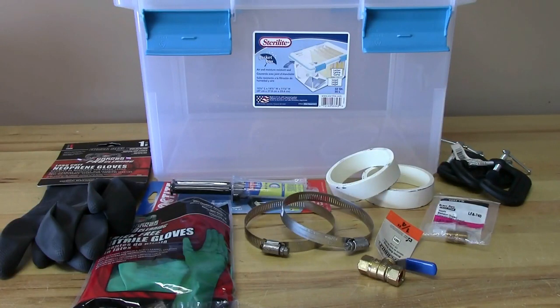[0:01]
Hello everyone. Today we're going to be making a very simple DIY glove box, which is going to come in handy for some future element series videos. And if you haven't seen one before, a glove box is very simply a sealed container that has gloves attached to it that allows you to work inside the container, keeping you separate from any harmful chemicals or keeping very sensitive chemicals separate from the air.
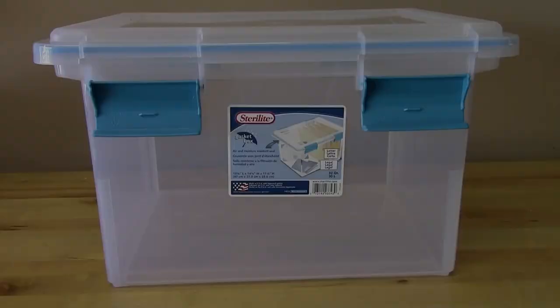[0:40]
And what we have in front of us is hopefully everything that's needed to construct this thing. Given my history with projects, I'll probably have to make several trips to Home Depot before this is done, but we'll see how it goes. So let's get started.
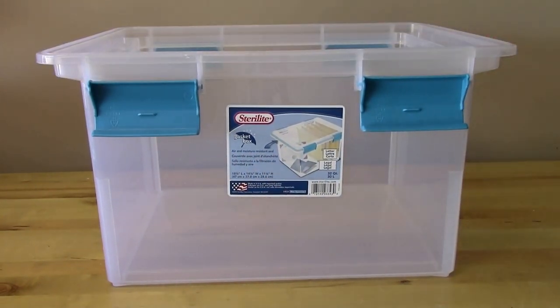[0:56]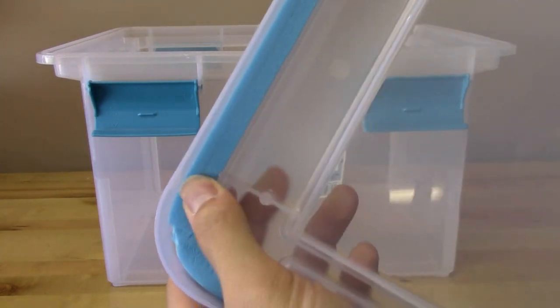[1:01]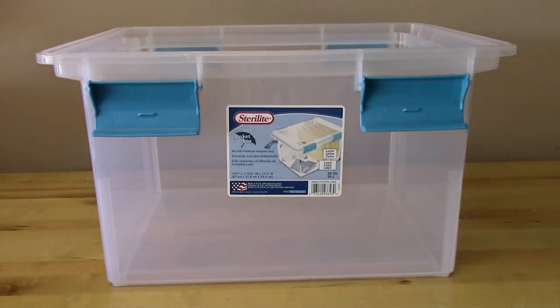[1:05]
Now the first component of the glove box will of course be the box. So I just bought a plastic container. Really any container will work, just whatever size you need. I liked this particular box because it's got this air and moisture resistant seal. If we take the lid off and take a look, it's got this foam liner around the inside here, and that's going to help to seal the box completely. If your box does not have a foam liner like that, that can easily be done by just a strip of foam, like weather stripping or something to that effect.
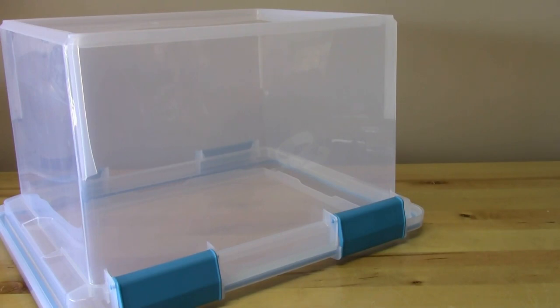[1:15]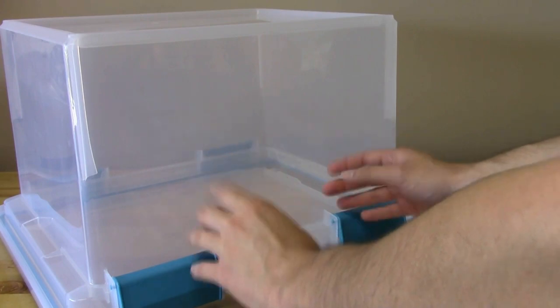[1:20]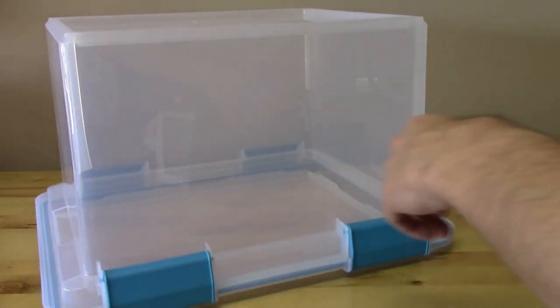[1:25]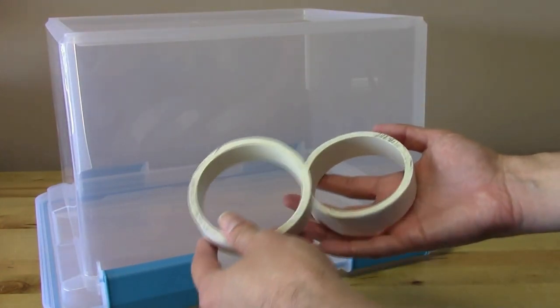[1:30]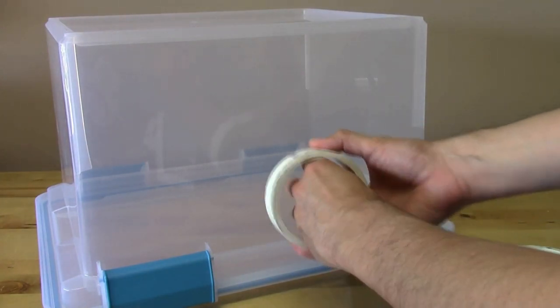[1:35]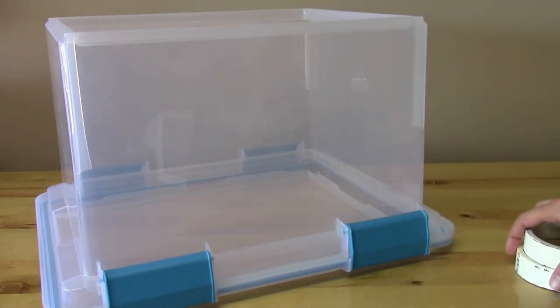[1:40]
So the first thing we'll need to do is make ports for the gloves. We want to do that at a height that's nice and comfortable for us. For me, that's probably about halfway up the box. And the ports are going to be made out of these. These are rings of 3-inch PVC pipe that I cut out of a larger pipe. I use 3-inch because my hands are small enough to fit through it. You could certainly use a different size if you need to. I just wanted to get the smallest size possible so as to not stretch the gloves out too much, because I feel like if the gloves are very stretched, they're not going to last very long.
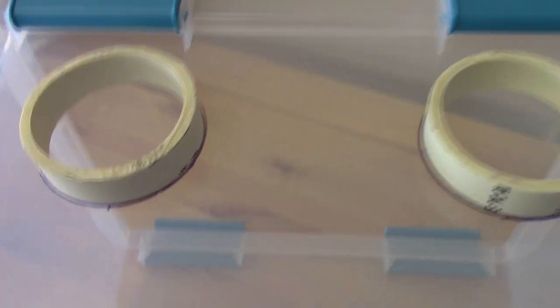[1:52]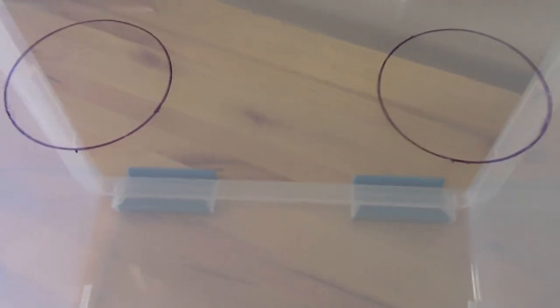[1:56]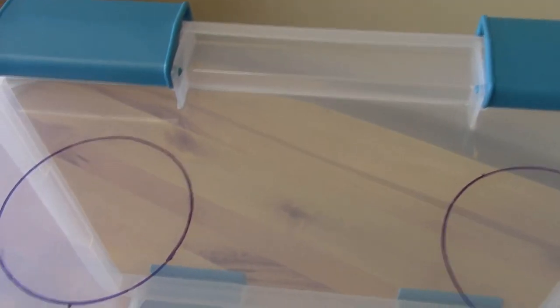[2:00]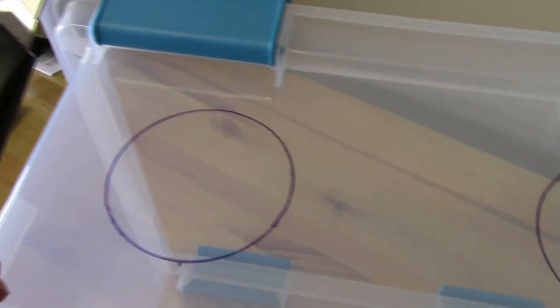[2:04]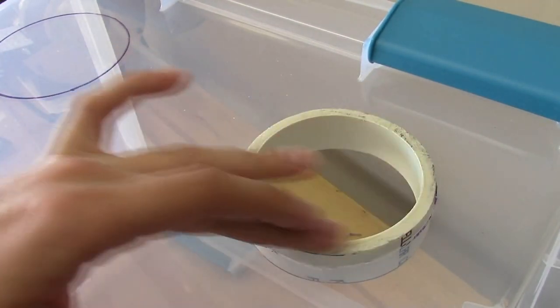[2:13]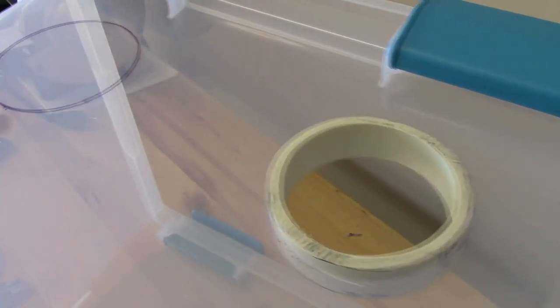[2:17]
All right, I've traced out the outside of each of the PVC pipes. And now I'm going to try to cut it with a knife here, and this may be pretty difficult, so I'm going to put the camera down and we'll see how it goes. Well, the knife really didn't work out very well, but what does work is a rotary tool. I used my Dremel, and I got this cut out nicely, and the PVC pipe fits in there pretty good, nice and snug. So now let's try the other one.
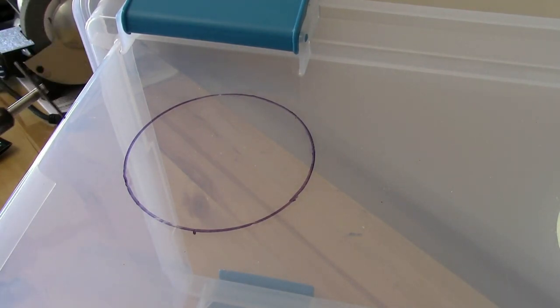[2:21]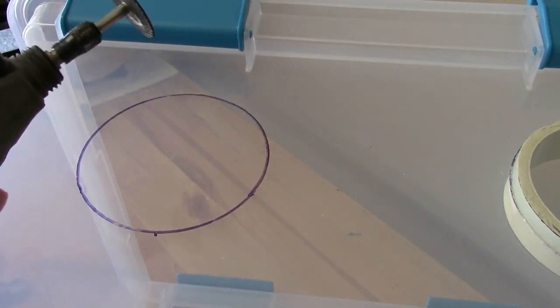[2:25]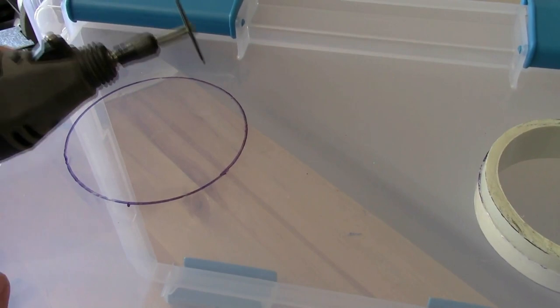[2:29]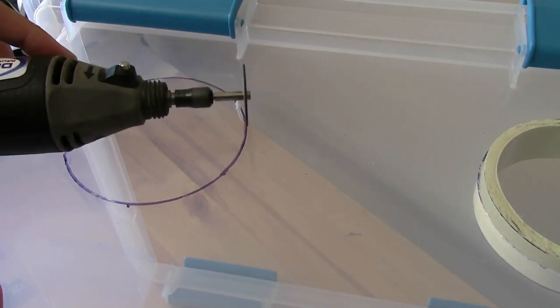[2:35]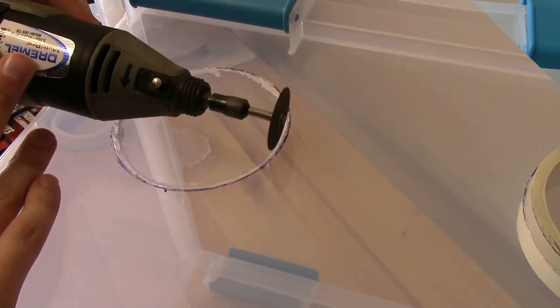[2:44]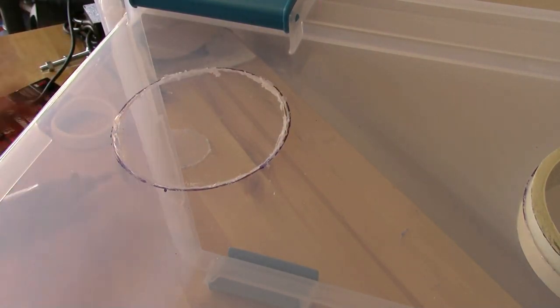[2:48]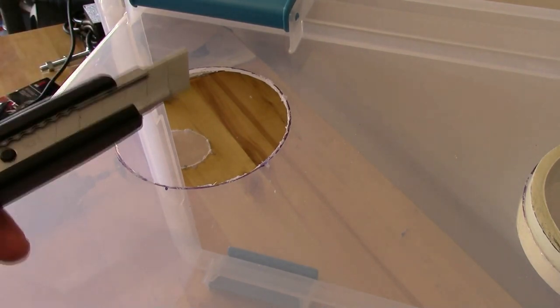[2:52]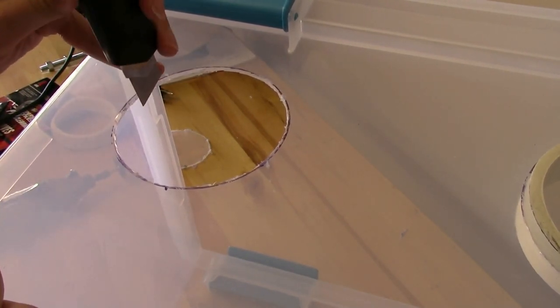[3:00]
This gets a little difficult because the plastic actually melts, so it kind of reseals the holes that you cut. But that's what the knife is for, cleaning it up a little bit. Perfect. Now I can go back and use the knife to clean it up a little bit, scrape off all the melted plastic, and flesh out the hole a little bit more so that the pipe can actually fit in it, because I don't think I cut it quite wide enough.
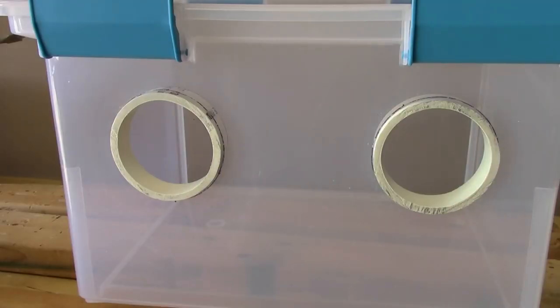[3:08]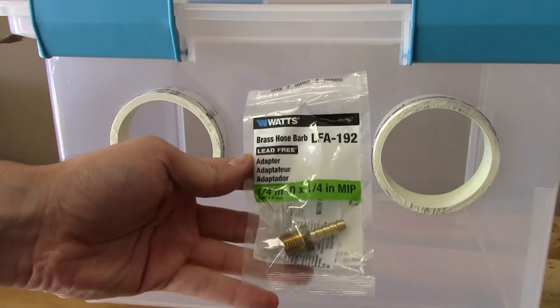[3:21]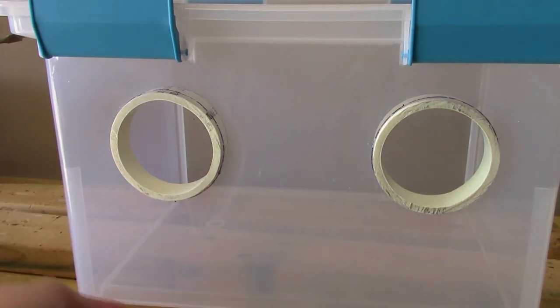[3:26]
Now that we've got both of the glove ports installed, the next piece to go in is the gas inlet. I'm going to be using my glove box as an inert atmosphere chamber, so I'm going to need some way to get my inert atmosphere into the box. And that's going to be from this thing, a 1/4-inch hose barb. So I need to drill a hole in the side of the box somewhere for this to fit into.
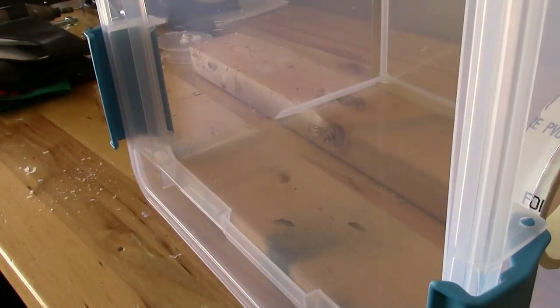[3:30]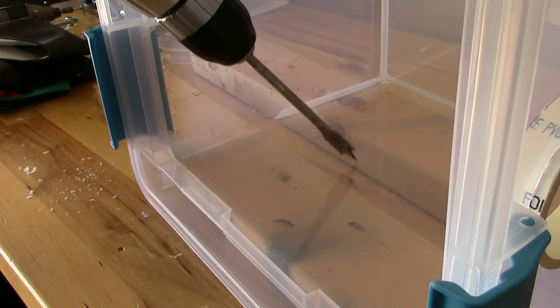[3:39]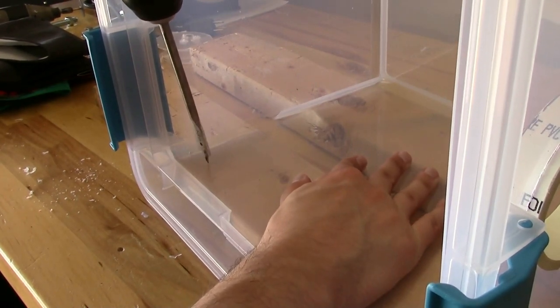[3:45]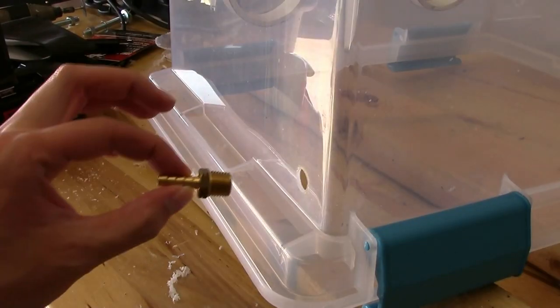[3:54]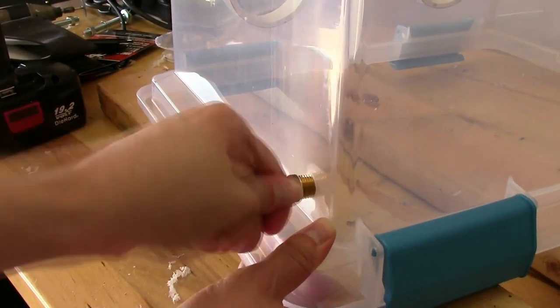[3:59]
And now I've got the box set on its side, propped up by a couple pieces of wood, and I'm going to drill through the box and straight into the wood. That way I'm not going to stress the plastic and potentially crack it, because it'll be supported by the wood. And I'll use a 1/2-inch paddle bit to get that done. Forgive me for the lack of audio here. I actually had the mic muted when I recorded this segment, so go figure. But you can see it makes a nice clean hole. So I'll just flip the box back right side up, and now I can thread the hose barb in place.
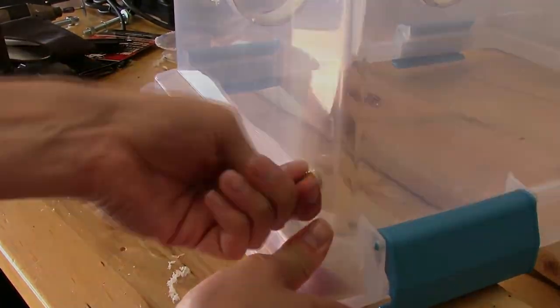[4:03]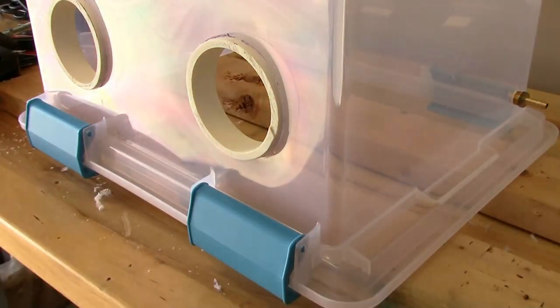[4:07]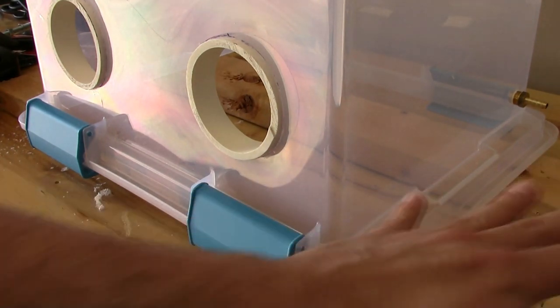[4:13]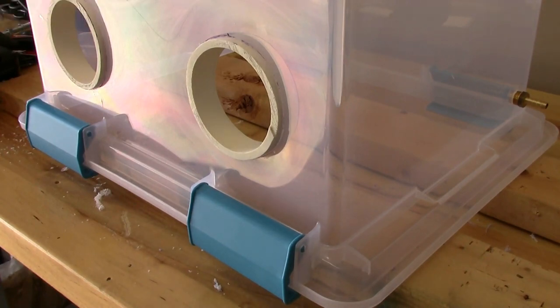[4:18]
Notice the placement of the gas inlet is in the back and on the bottom, because I'm going to be using argon as my inert gas. Argon is heavier than air, so I figure I'll put the gas inlet on the bottom. It'll slowly flow in and fill up the box and displace the air at the top.
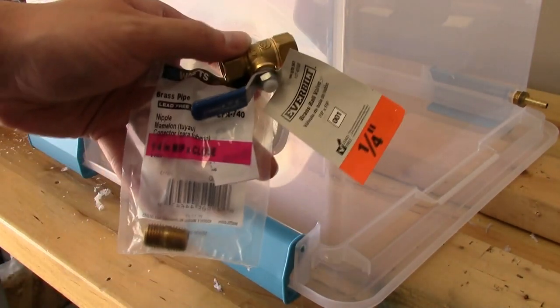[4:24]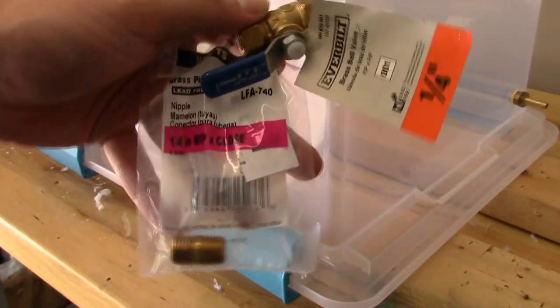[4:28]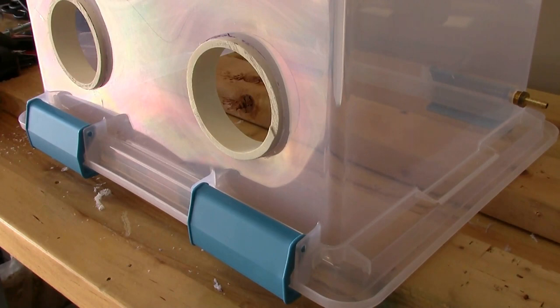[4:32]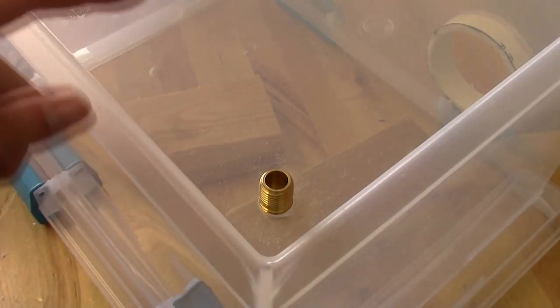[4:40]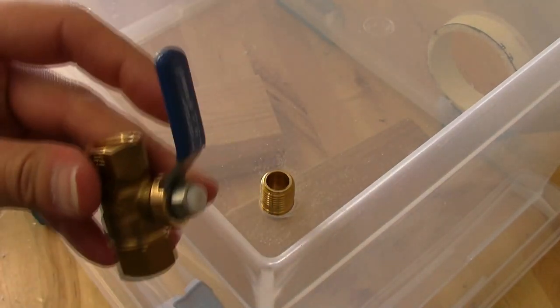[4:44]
Now to get out the top, we need an outlet for the gas, and I'm going to use this combination of things. We've got a 1/4-inch ball valve and a connector. It's a pipe nipple, and that's going to be up on the top of the box here for the air to escape. And then once it's filled with argon, I can close off the ball valve, and hopefully that'll be good enough. So I drilled this hole just like before on the top of the box this time, and I was able to thread this pipe nipple in there, and now we can get the ball valve on top of that.
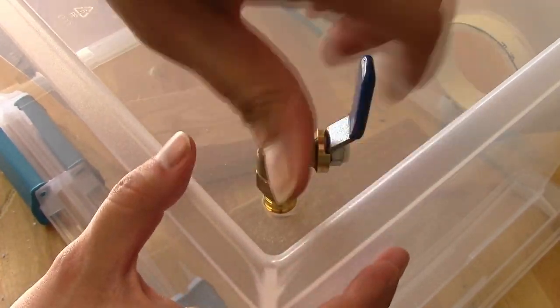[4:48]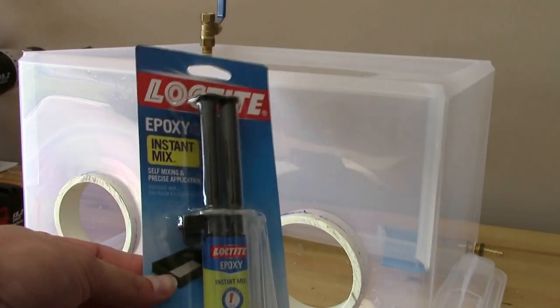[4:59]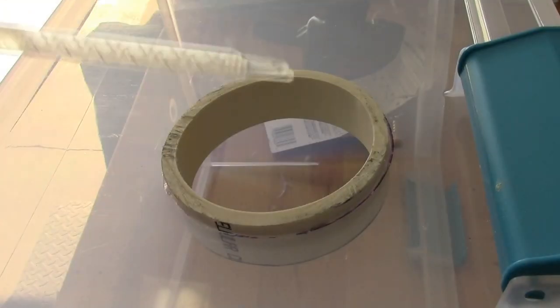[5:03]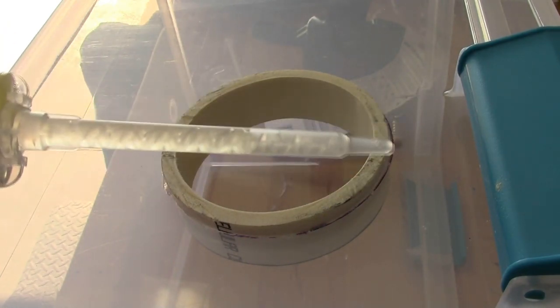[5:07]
So now that all the pieces are in place, we just need to epoxy all of the seals to seal them in there permanently and close off any leaks. And I'm going to use this instant mix epoxy stuff. You know, this thing's pretty cool because of the tip, it mixes as it flows out. That's a neat little bit of fluid dynamics there.
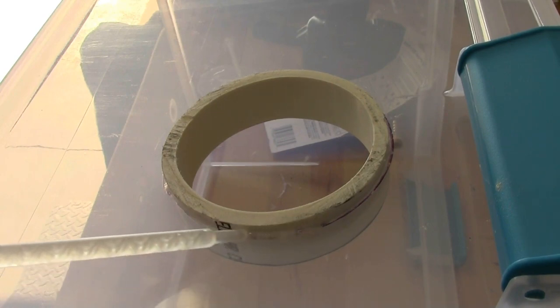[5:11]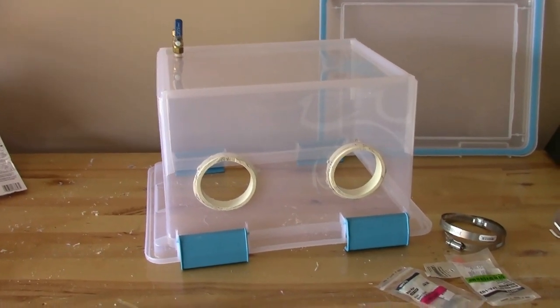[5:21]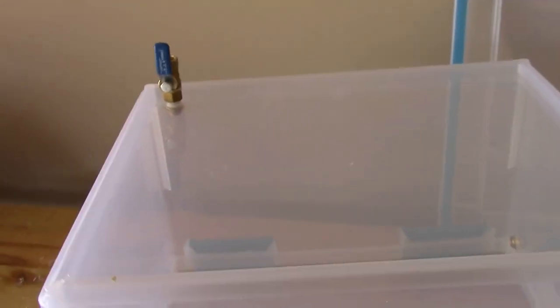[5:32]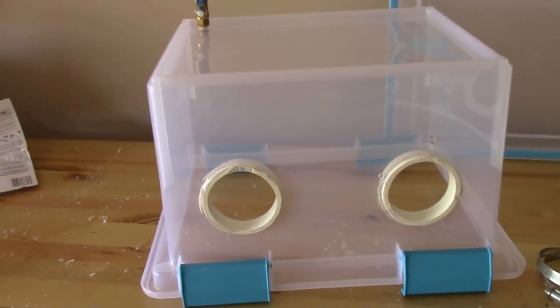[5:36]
So we're gonna apply epoxy all the way around on all pieces and on both sides of each piece. I've let the epoxy set up overnight, which is probably a little excessive, but I figured why not. Everything is now in there securely. We've got the two glove ports in the front, the gas inlet in the back, and the gas outlet up top. So now all that's left is to attach the gloves.
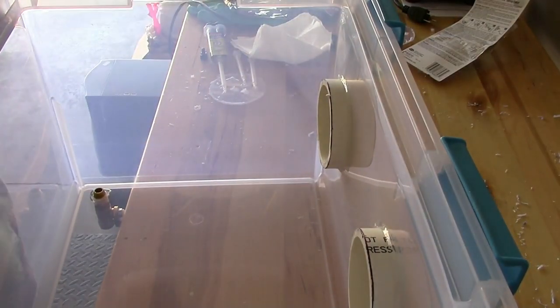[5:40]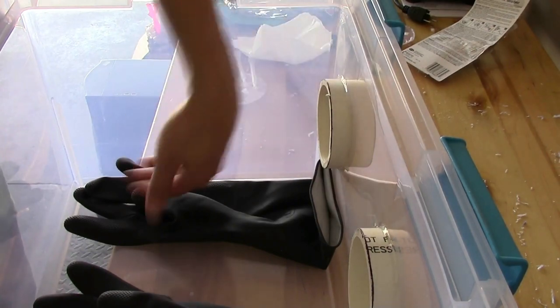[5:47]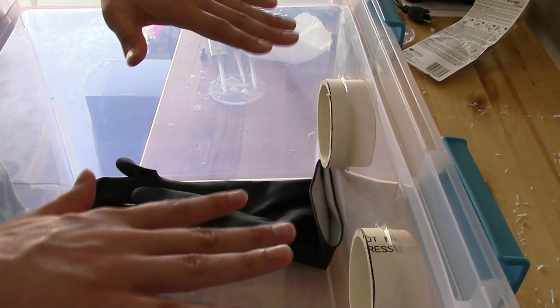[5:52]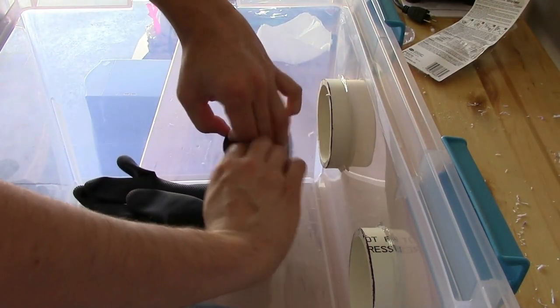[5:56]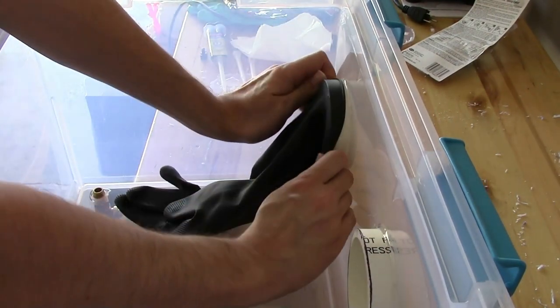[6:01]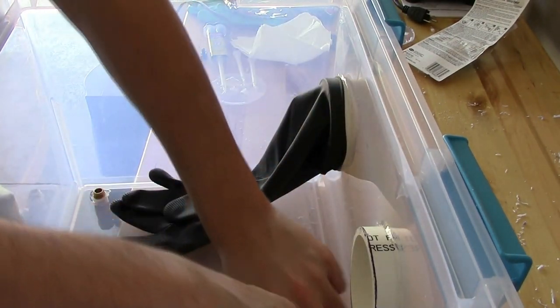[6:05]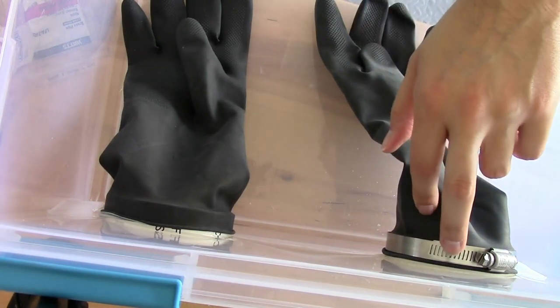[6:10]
So I flipped the box upside down, and now we're gonna stick the gloves on, and gotta make sure to do this the right way. Left glove goes on the left here with the palm facing up and so forth, because now this top surface is going to be actually the bottom. So all we got to do is slide these over the PVC mounting, which can be a little tricky. There we go.
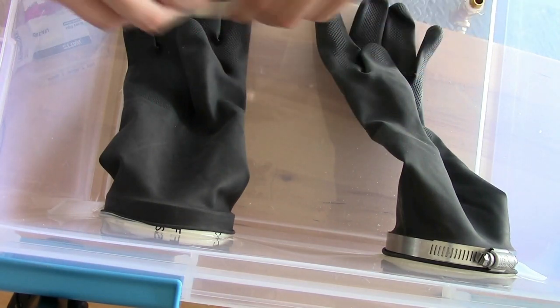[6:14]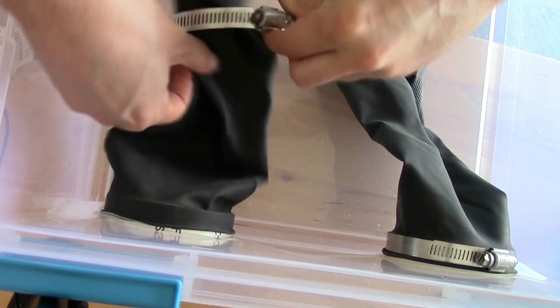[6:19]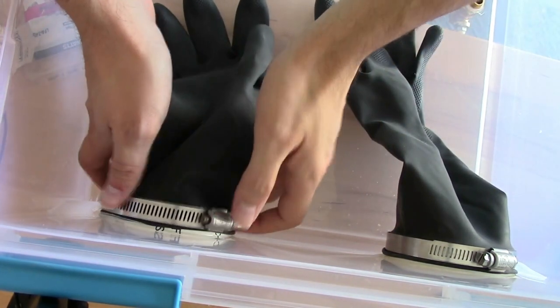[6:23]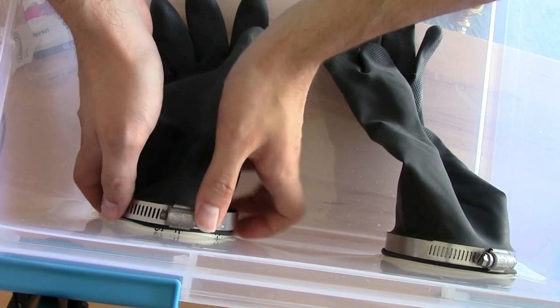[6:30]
And now to permanently secure the gloves in place, we're going to use these pipe clamps, I think they're called, the 3 to 5 inch pipe clamps. And I've already done it on the one glove, but it's very simple. It just goes over the other one on top of the PVC, and you just use a screwdriver to secure it in place. Make sure the glove is as far back as you can so you have the most surface area.
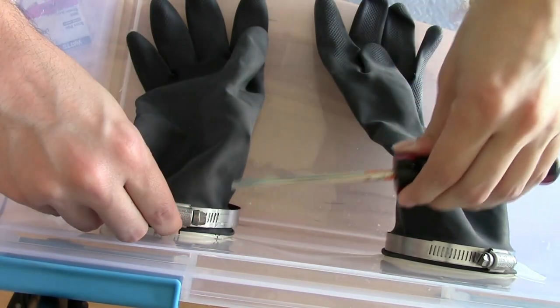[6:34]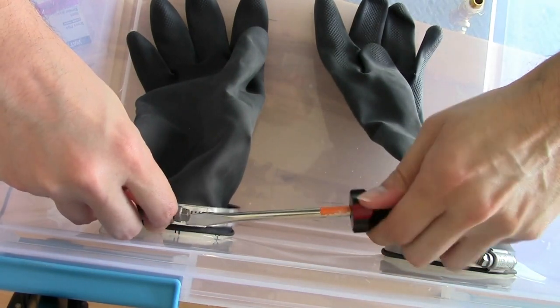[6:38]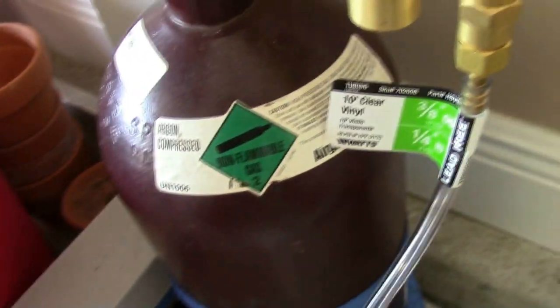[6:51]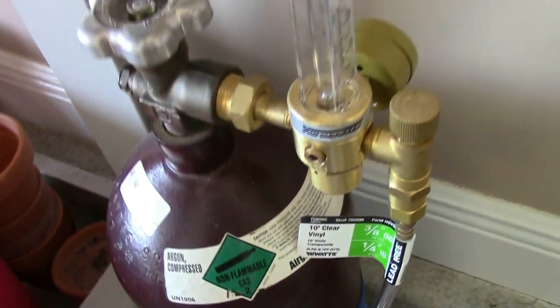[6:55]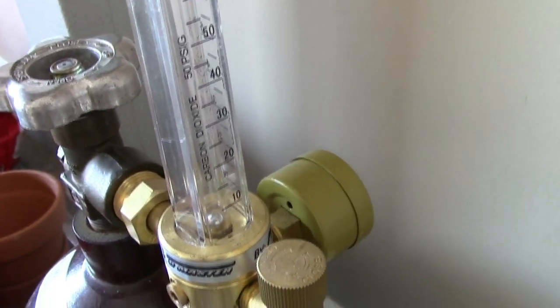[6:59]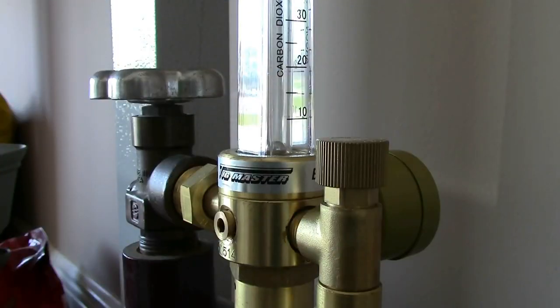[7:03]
So with that, the glove box is complete. Gloves are secured. We've got gas outlet, gas inlet, and the gas inlet runs over the side here to my argon cylinder. And this is what we're going to be using to make the inert atmosphere. This is a 40 cubic foot tank of argon with a flow meter regulator that tells me the speed that the gas is coming out.
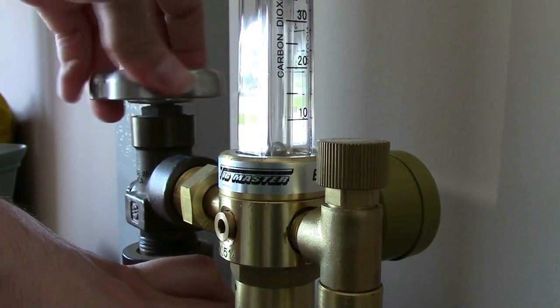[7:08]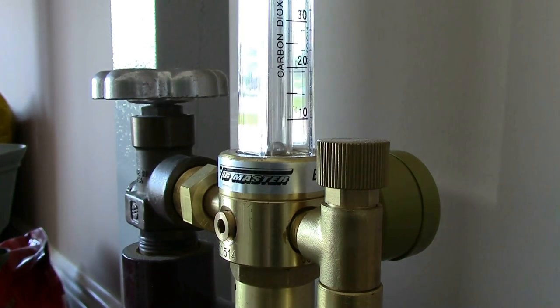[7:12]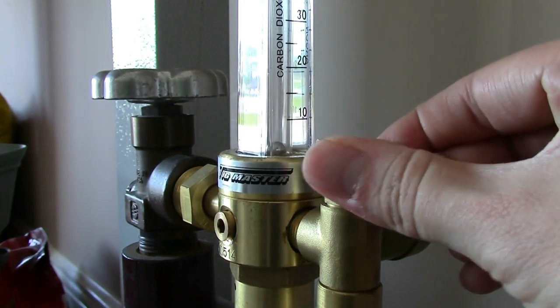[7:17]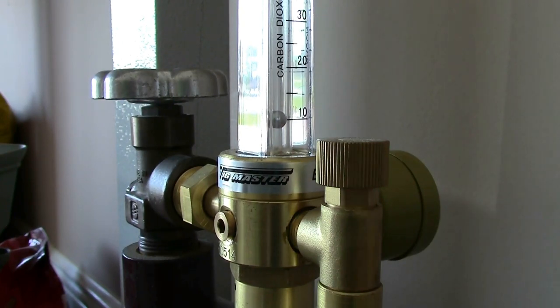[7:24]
All right, let's take her on a maiden voyage. So you can see the regulator here. There's a little ball that when you open the valve, it floats up to the proper flow rate. So this is in standard cubic feet per hour. If we do this at 10 standard cubic feet, I've calculated that this will take 6.5 minutes to completely fill my box. I don't want to go really fast because I want it to just slowly flow into the bottom and displace the air as it flows out the top.
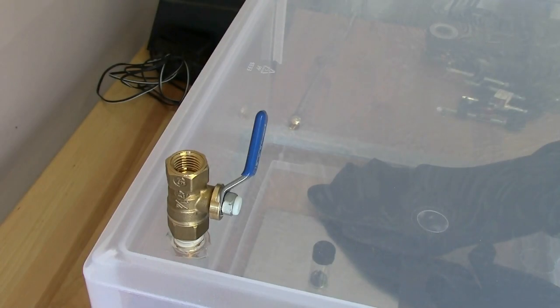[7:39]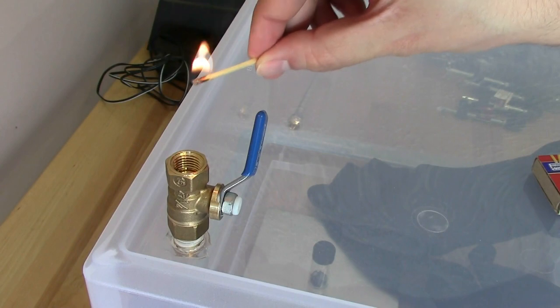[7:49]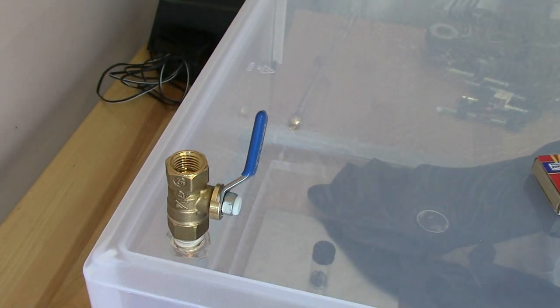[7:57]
So I've come up with a very crude test to see when the box is full. I've got the valve up here open. And what I'm gonna do is just light a match and place it at the exit. And you can see the air that's coming out is blowing the flame around, but the flame is still lit. If I try that and the flame goes out, that means the argon's coming out and there's no air left in the box, more or less.
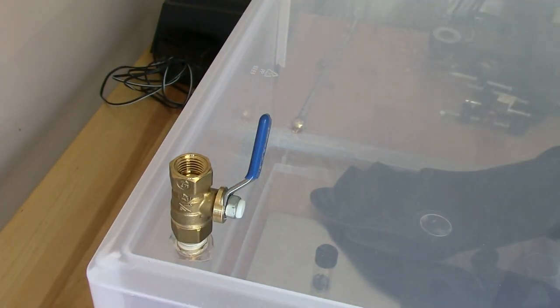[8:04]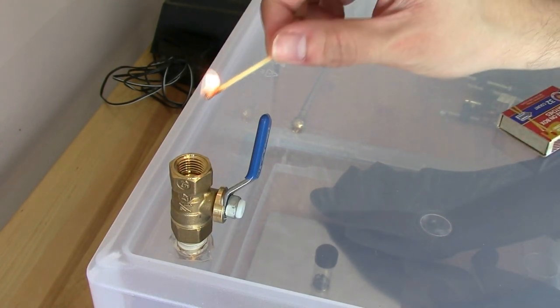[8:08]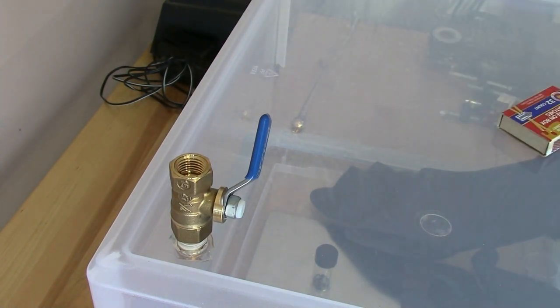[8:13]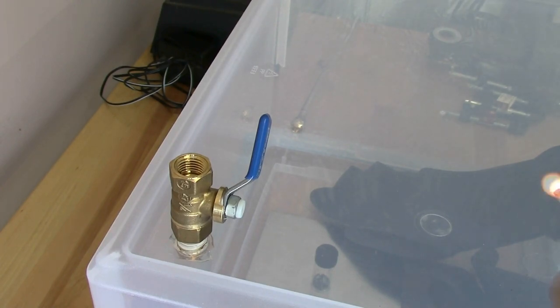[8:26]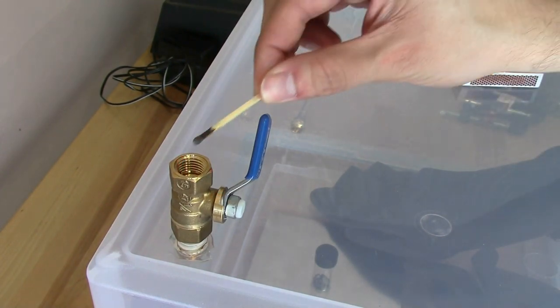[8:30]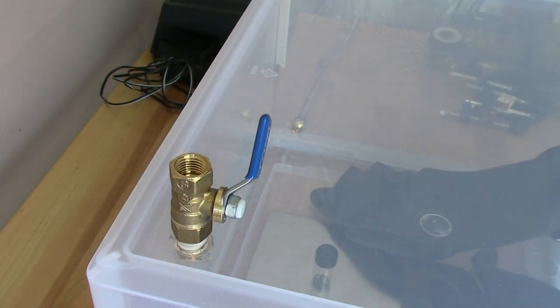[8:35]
All right, it's been 7 minutes, so let's redo my match test. See how that goes. Ah, goes out a lot easier. It's still burning a little bit. I think probably because in theory it takes 6.5 minutes, but in practice it's not going to exactly displace the air. It's going to mix a little bit, so we're going to have to fill this a bit longer than theory. Let's try it again real quick. Oh, it's close, man. I'll give it another minute, I think.
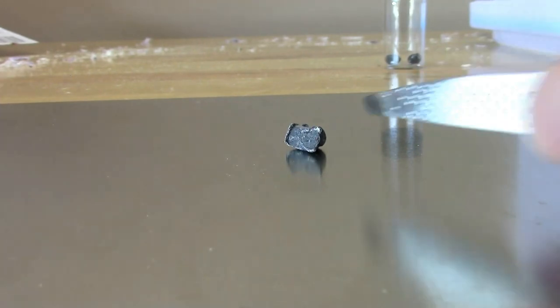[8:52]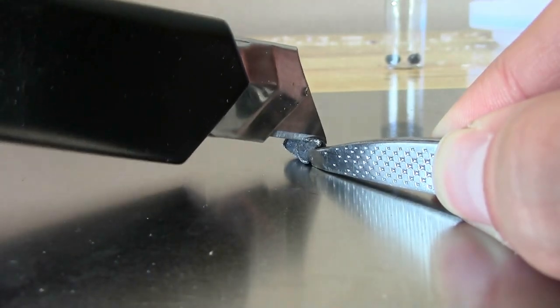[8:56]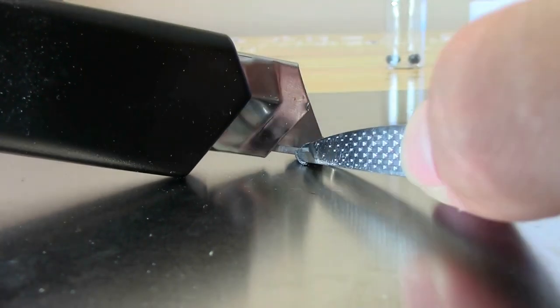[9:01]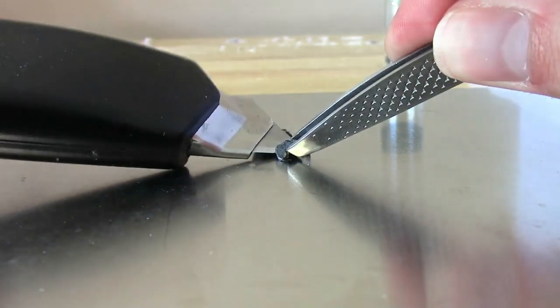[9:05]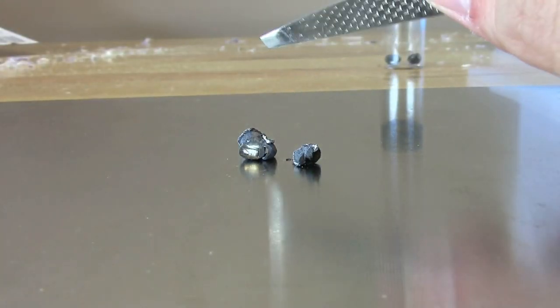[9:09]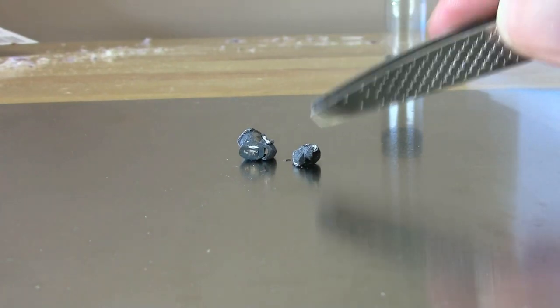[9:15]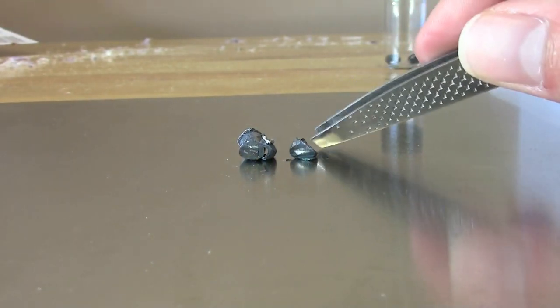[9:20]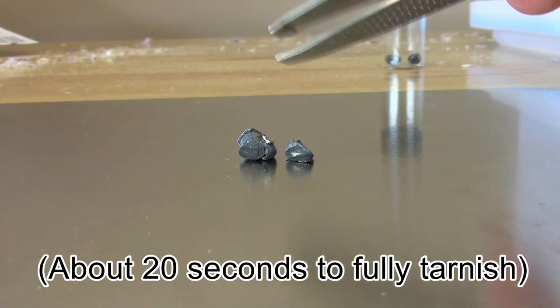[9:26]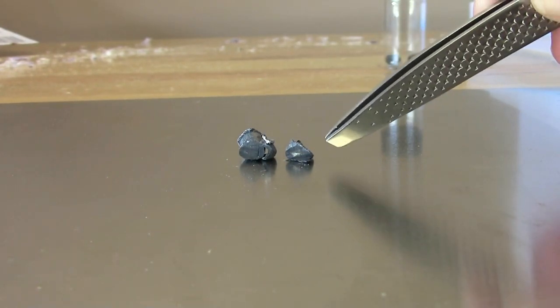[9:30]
So to test this, let's compare the difference in the rate of tarnishing from a reactive metal in air versus inside the glove box. So let's start with lithium, because that's the first thing I'm going to use the box for. And right now it's in the air and it's hot and very humid out, so we'll see how quickly this actually tarnishes when it's freshly cut. You can see lithium is a fairly soft metal, so you can cut through it pretty easily. And you cut it and it reveals a nice shiny metallic surface. And let's just watch that for a minute. See, that didn't take very long at all. This left piece is already completely tarnished and the right one is well on its way.
All right, box is filled with argon. I think we're ready to test this thing out. This will also be a good test of whether I can do manual dexterity operations with these big gloves. These are black neoprene gloves, by the way, which provide pretty good chemical resistance overall. I got them mostly because they're long.
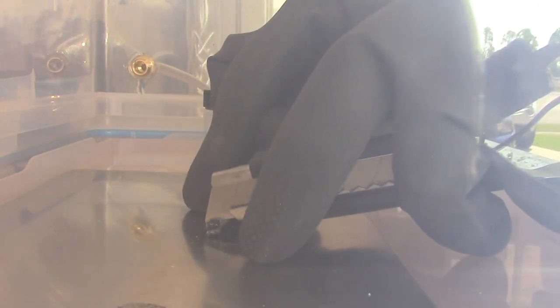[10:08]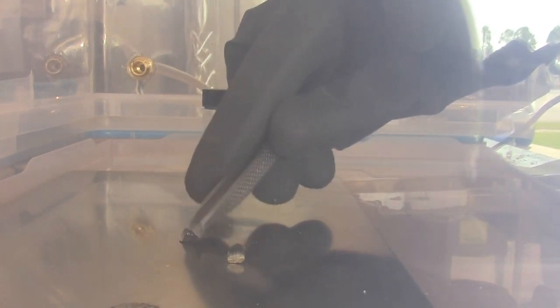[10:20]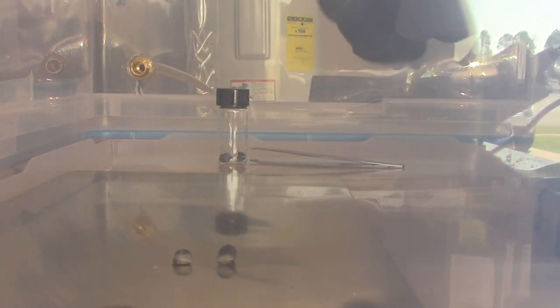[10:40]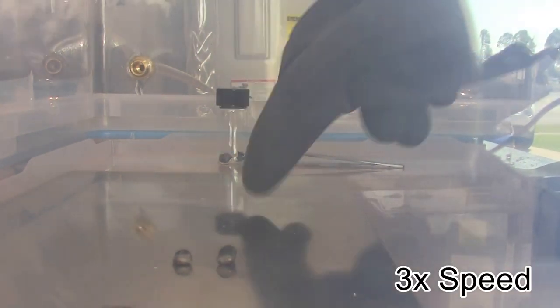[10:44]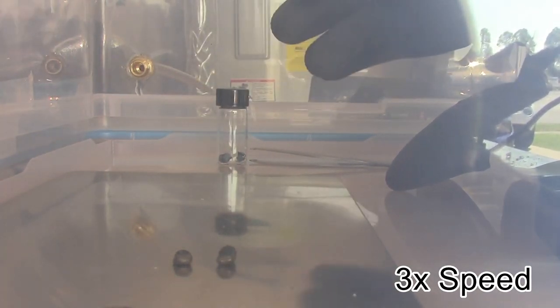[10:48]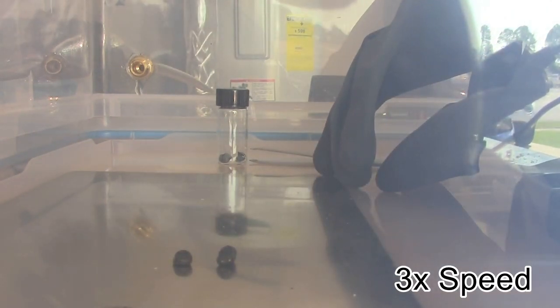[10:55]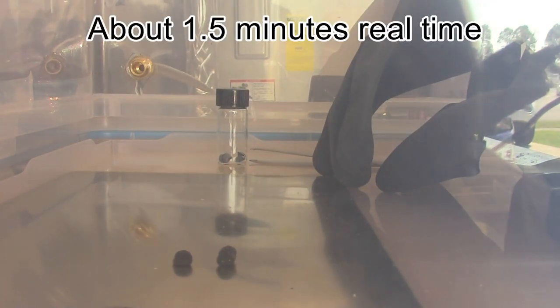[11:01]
All right, now I hope you can see this, but we're gonna slice this up just like the last one and see how long it takes to tarnish. So you see we get the nice shiny metallic surface. I think you can see that okay. And let's see how long this lasts. Well, it definitely went slower, but it still tarnished pretty quickly.
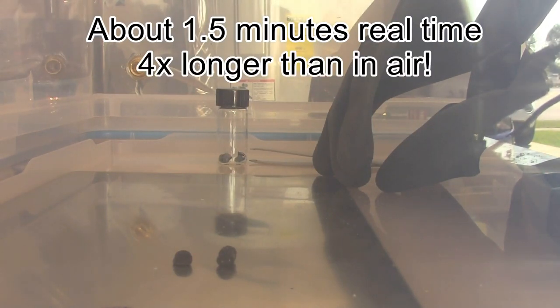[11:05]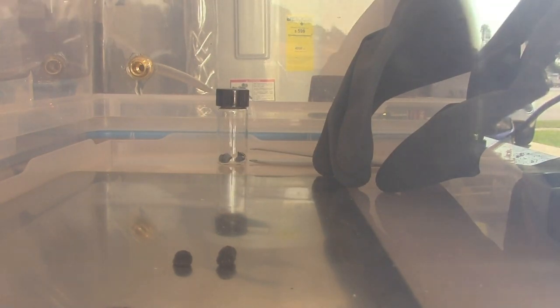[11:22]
That's going to take some thought. Maybe I need to flush it out a little bit longer with argon to really get all the oxygen and the moisture out of there. Or possibly I could add some kind of moisture absorbent like those hot hands hand warmers. I've seen videos where people use those as moisture absorbers to pretty good effect.
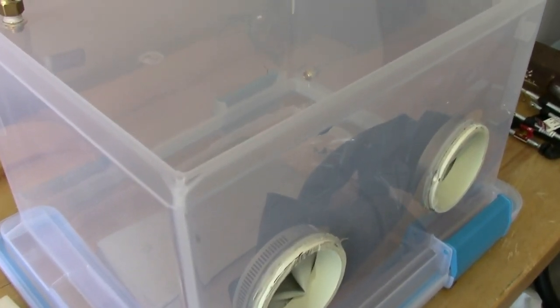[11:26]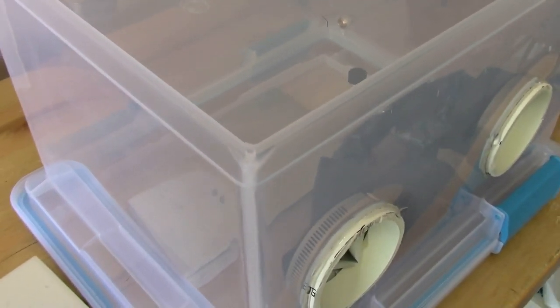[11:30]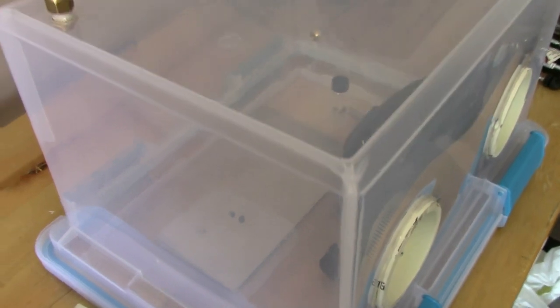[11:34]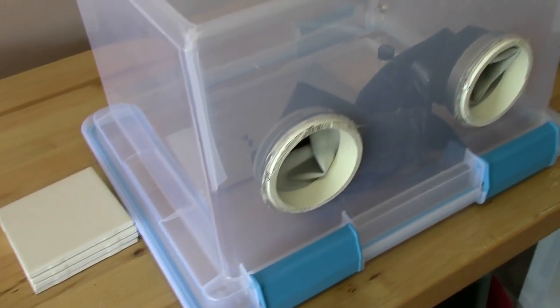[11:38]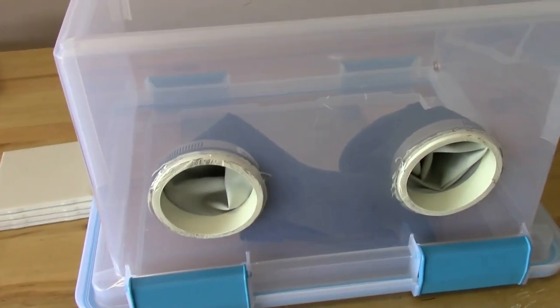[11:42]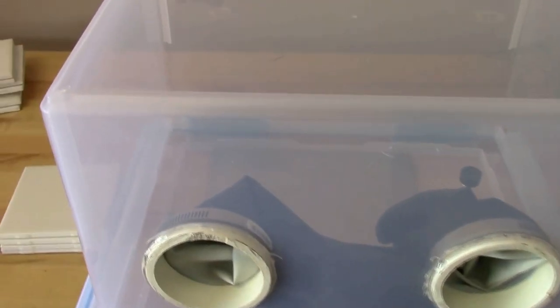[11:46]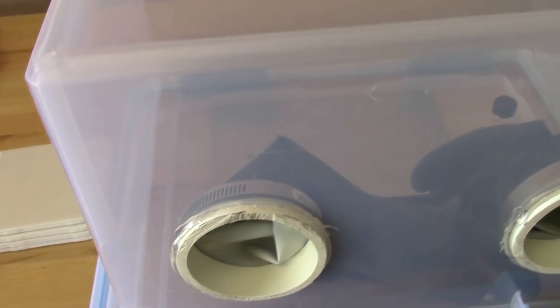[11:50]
So there you have it, a DIY glove box that works reasonably well. I think I need to, like I said, tweak it a little bit, maybe add a couple of things to it. But as it stands, it took me about $40 to build this entire thing, plus the cost of the argon cylinder, which adds probably $175 total with all of the cylinder and the regulator and all that. But just the box itself was only $40. So that's pretty good as far as glove boxes go.
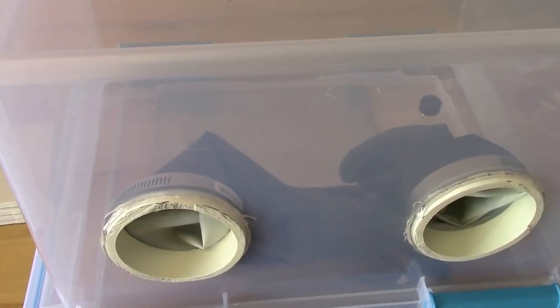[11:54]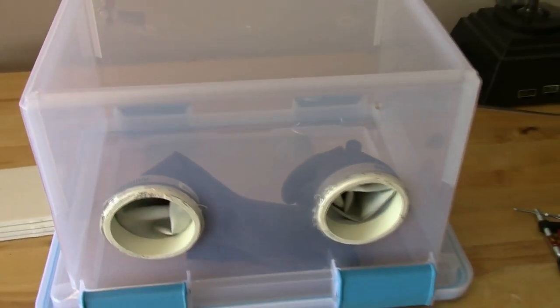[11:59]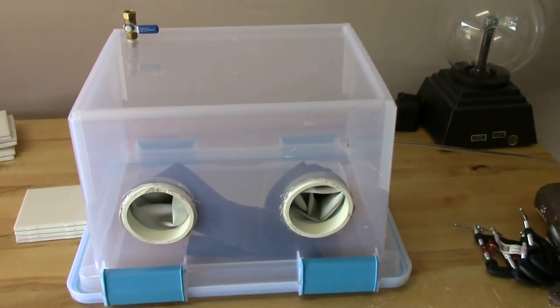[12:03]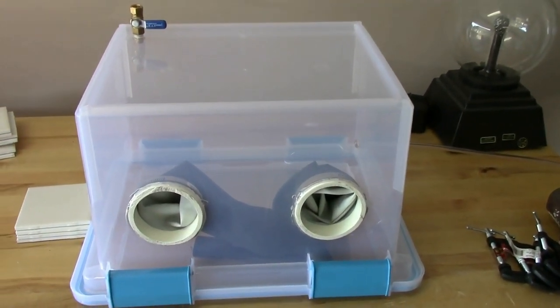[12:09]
And it took me probably a total of 2 or 3 hours to build it, but I bet you if you were a bit more handy than I am, then this could easily be done in less than an hour. And any improvements I make, I'll show in the next video where I use the glove box.